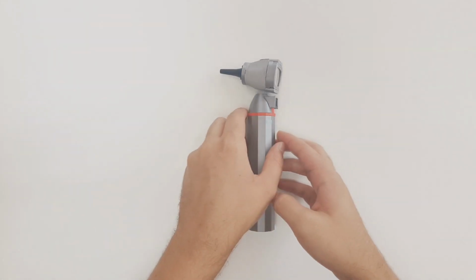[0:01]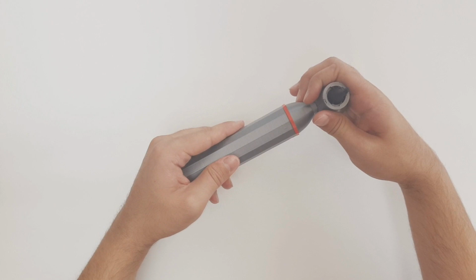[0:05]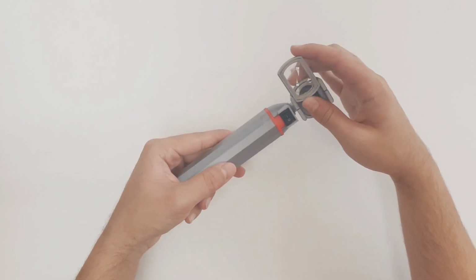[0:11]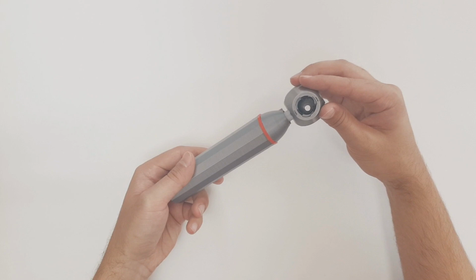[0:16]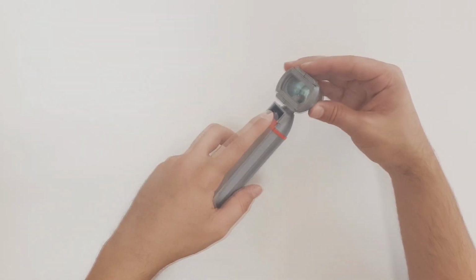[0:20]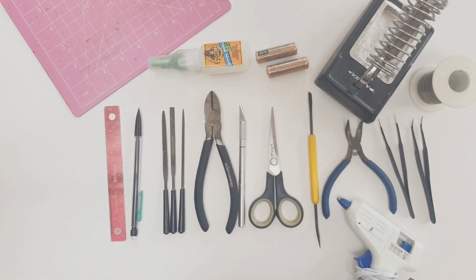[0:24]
In this video tutorial, I will be showing you how to fully assemble the Build Your Otoscope, a 3D printed open source device used to examine the outer ear. This device is designed by E4R Designs and published by GLIA. We'll start by reviewing some tools that you'll need for this build.
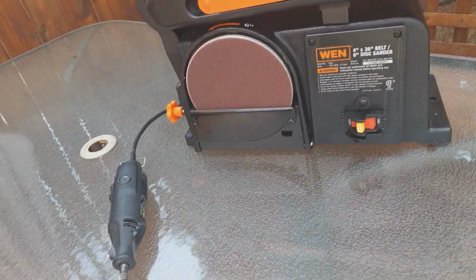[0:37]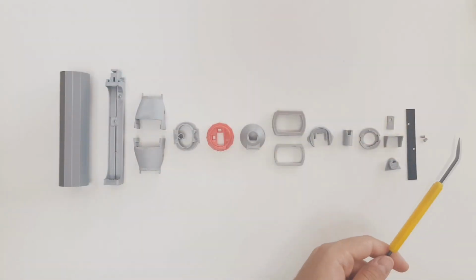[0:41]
You should have some precision filers, an X-Acto knife, super glue, a glue gun, various pliers, and a soldering iron. Also, a Dremel or a belt sander is needed for the lens portion of this video. We will go over the 3D printed parts you should have right now.
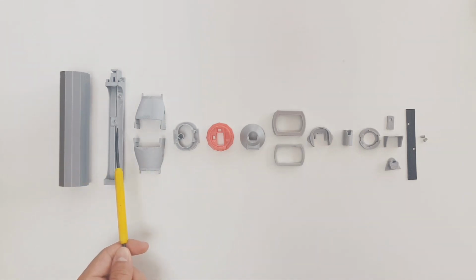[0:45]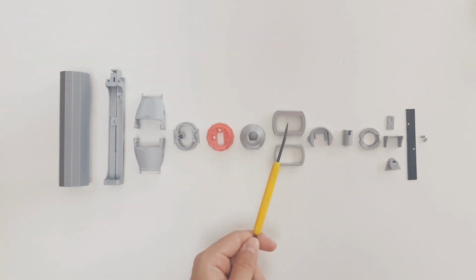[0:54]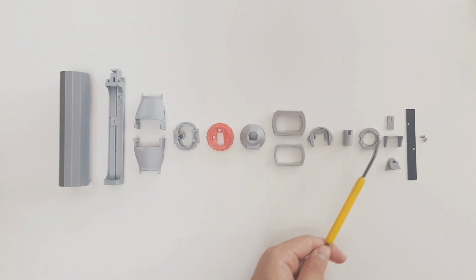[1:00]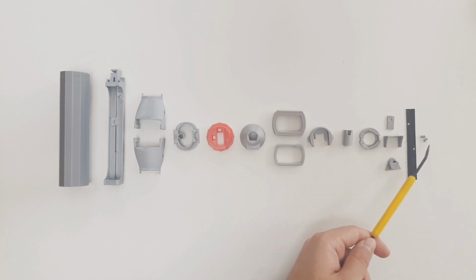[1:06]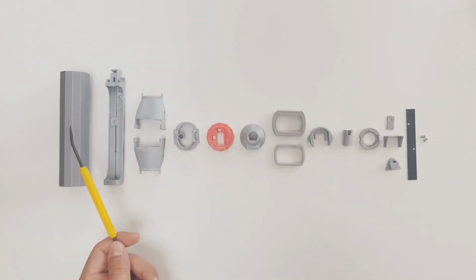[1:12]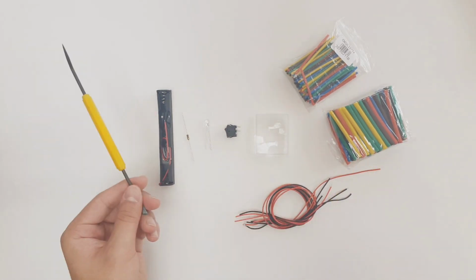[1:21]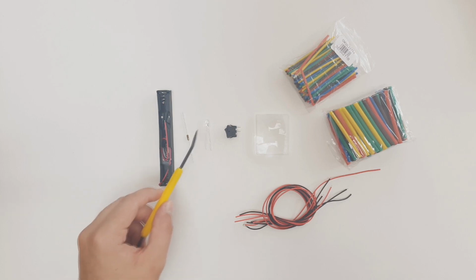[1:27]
There's the handle, battery compartment, two head shells, inner head shell, bottom button, top button, lens holder bottom, lens holder top, handle coupler, neck, specula holder, button lock, button protector, head lock, nameplate, and two nameplate locks. I printed all of these parts at 0.12mm resolution and 100% infill, except for the handle, which I printed at 20% infill.
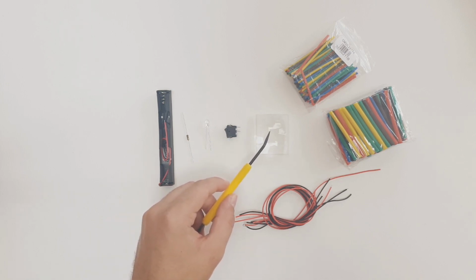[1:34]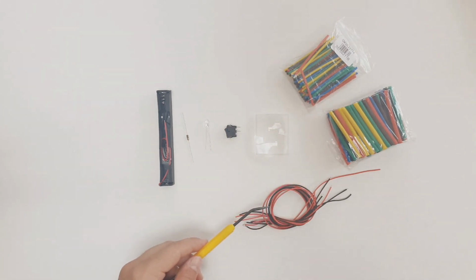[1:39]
For non-3D printed parts, you will need a AA battery holder, a 10 ohm resistor, a white 5mm LED light, a switch, a 3x magnification lens, shrink tubing, and extra wiring. A list of materials can be found in the description below.
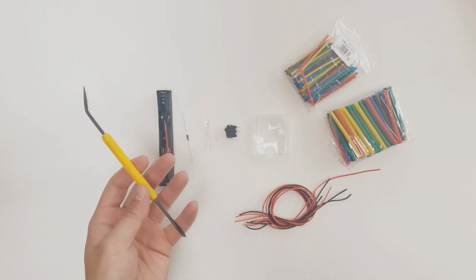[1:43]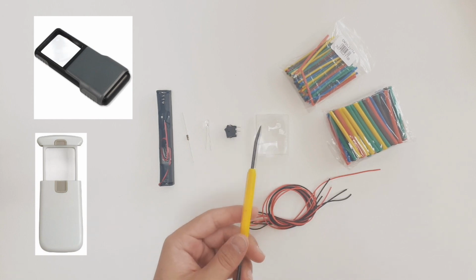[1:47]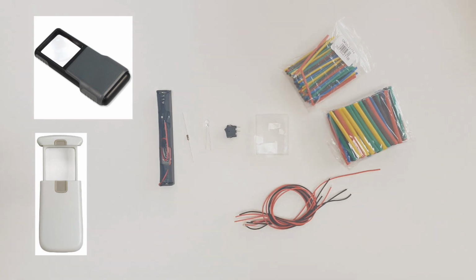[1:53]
The lens you should use can be taken from a pocket reader or small magnifying glass found at a department store or online. Ensure it is 3x magnification and made of acrylic material, not glass, so you'll be able to adjust and cut it to size.
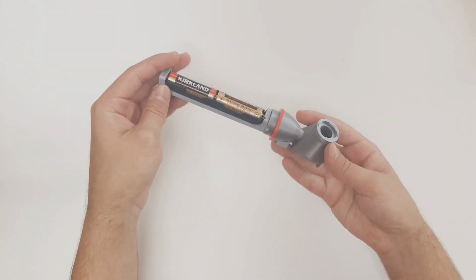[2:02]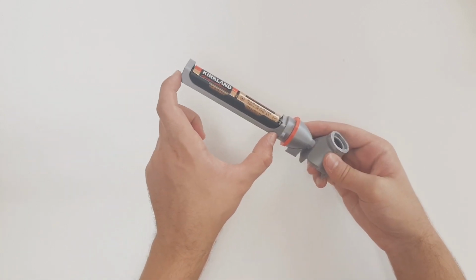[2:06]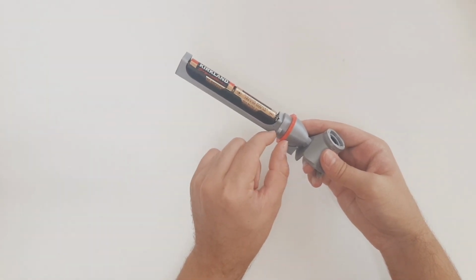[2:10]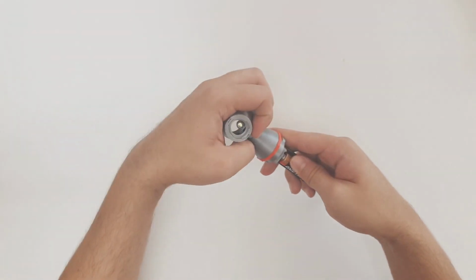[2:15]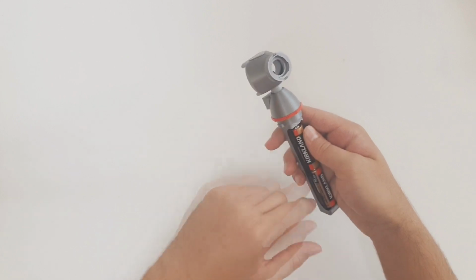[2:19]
In building this otoscope, we will start by first assembling the battery compartment area. Then we will add a few pieces to this battery compartment area. We'll then switch gears and assemble the otoscope head. And after the head, we will assemble this middle button area. The last step is putting it all together.
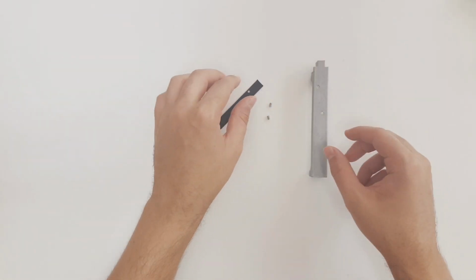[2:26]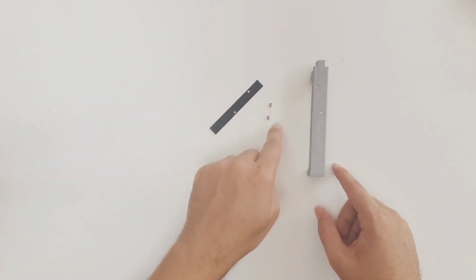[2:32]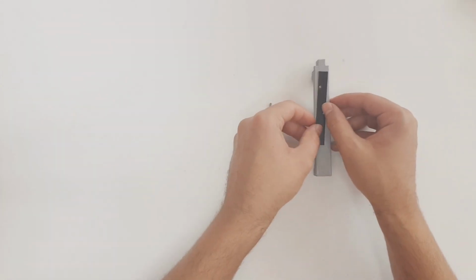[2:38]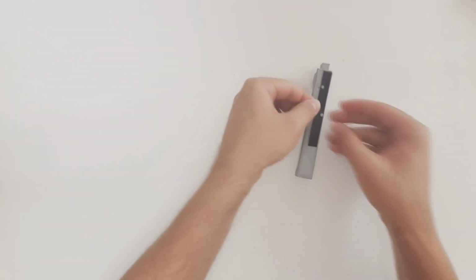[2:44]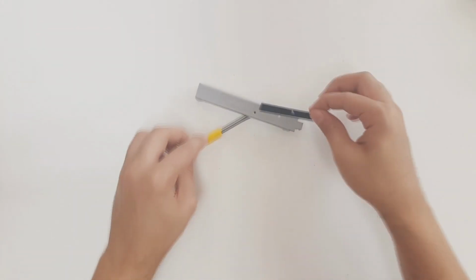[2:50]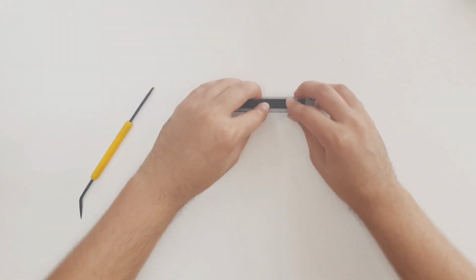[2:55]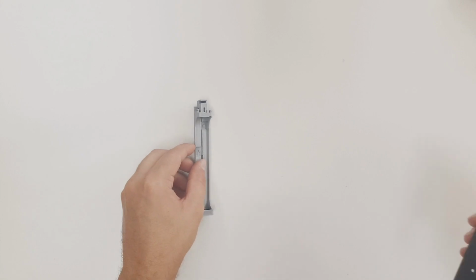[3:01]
So let's get started. We'll grab the battery compartment, nameplate, and two nameplate locks. We want to mount the nameplate on the back of the battery compartment using the locks, just like so. Whenever you're going to glue something down, it's always a good idea to dry fit the pieces first. Make sure everything fits nicely, then glue it into place.
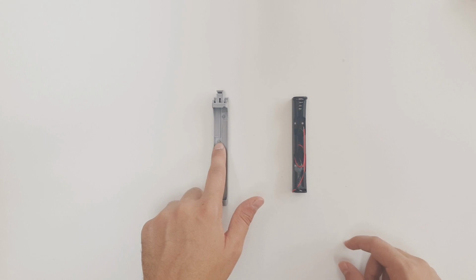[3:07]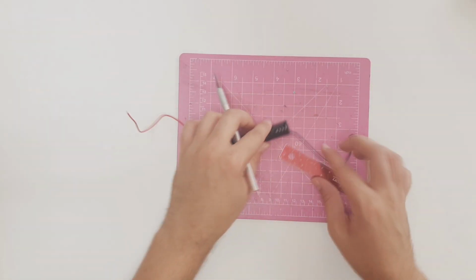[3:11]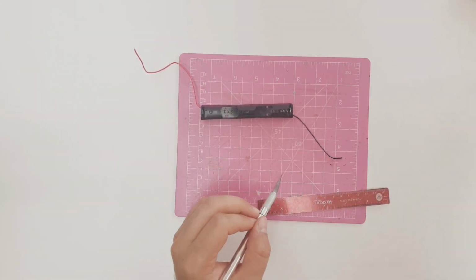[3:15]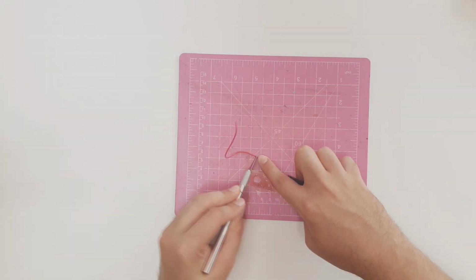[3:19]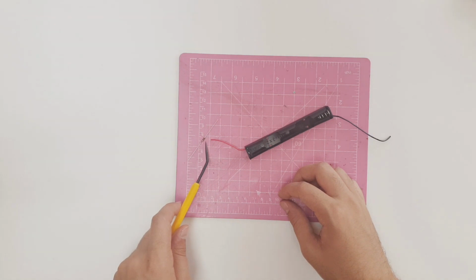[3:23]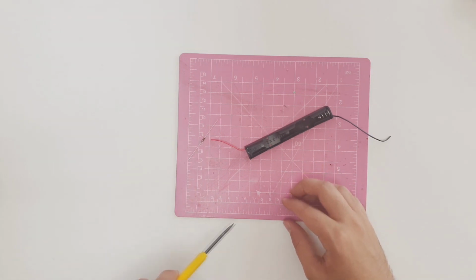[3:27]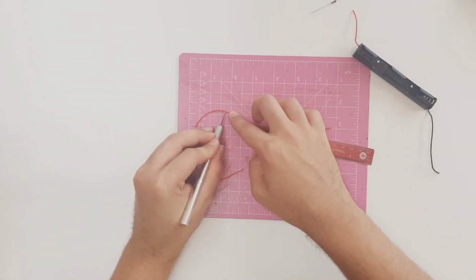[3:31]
With the nameplate secured, we now want to install the AA battery holder in its slot. We need to do some minor alterations to the wiring first. We need to cut the black wire to be 80mm long, and now cut the red wire to be 44mm long. We will add the 10 ohm resistor to the end of this red wire, and then add a wire to the other side of the resistor that is 130mm long.
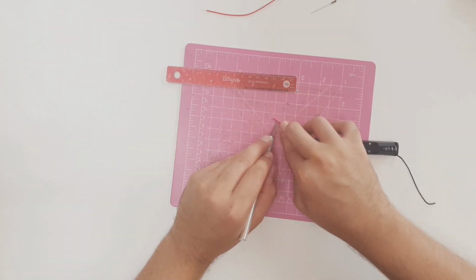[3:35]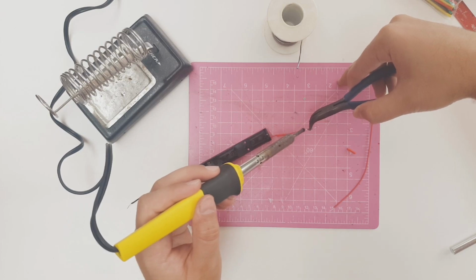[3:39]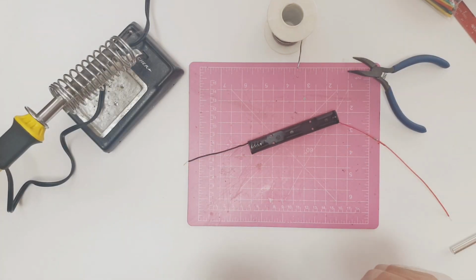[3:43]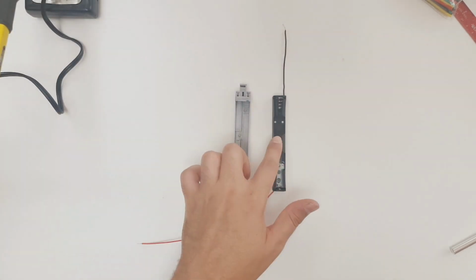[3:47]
So let's cut a red wire 130mm long. I'm going to strip all of the ends of the wires and solder the resistor to the end of the red wire. Your battery holder should look like this. Let's install the battery holder into the battery compartment.
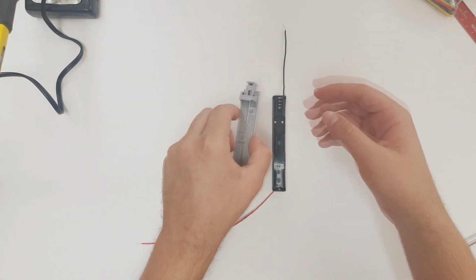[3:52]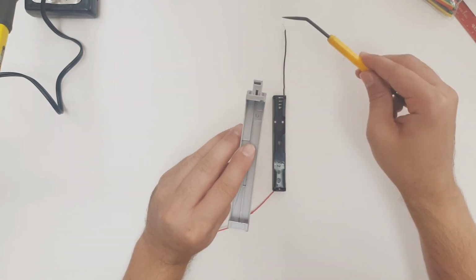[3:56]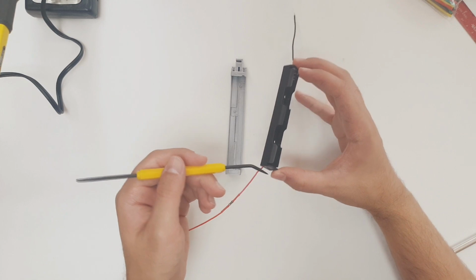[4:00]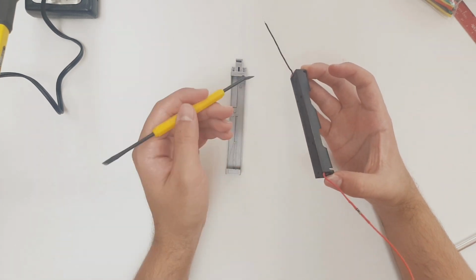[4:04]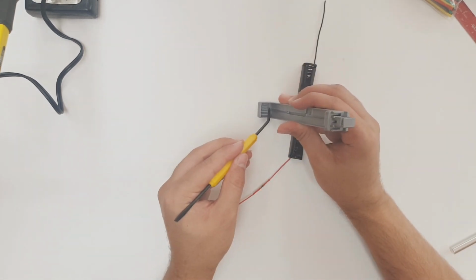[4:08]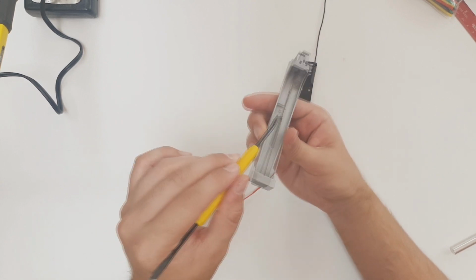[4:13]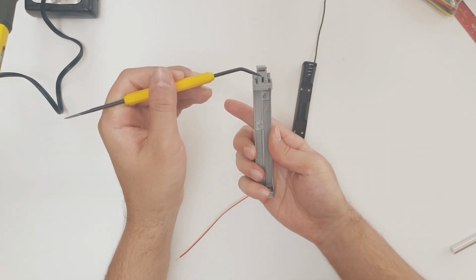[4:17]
This is a tight fit, so take your time. The black wire will go through this hole here and extend out. The red wire will curl under the holder, run along the bottom, and come out through the center hole in the battery compartment. The red wire actually fits in this track here, with the resistor fitting in this divot. And this is the hole that the red wire comes out from.
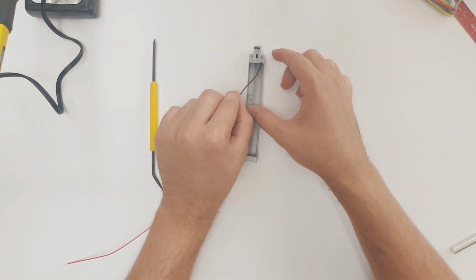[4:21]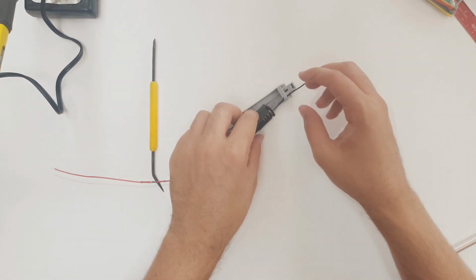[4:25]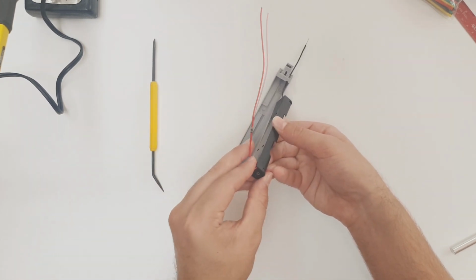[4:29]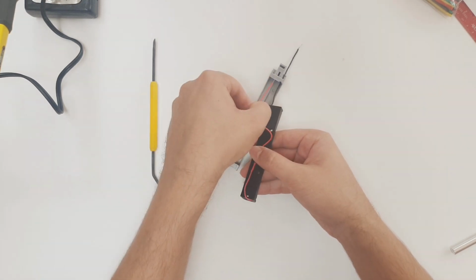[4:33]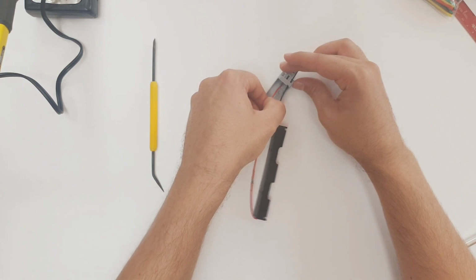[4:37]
So let's get this installed. First, push the black wire through the hole. Then wrap the red wire like so and push it through its hole. You may need to bend the end of the wire to get it pointing up, and using a pair of precision pliers really helps here.
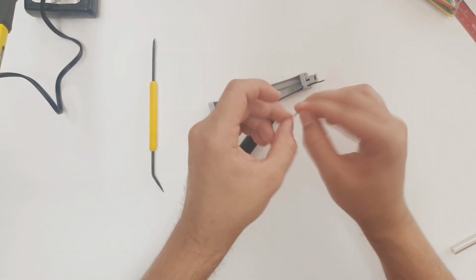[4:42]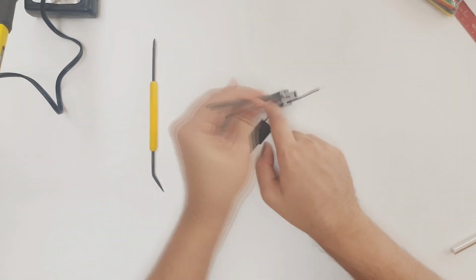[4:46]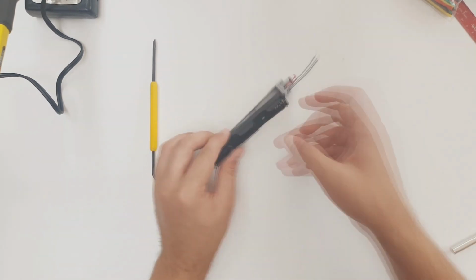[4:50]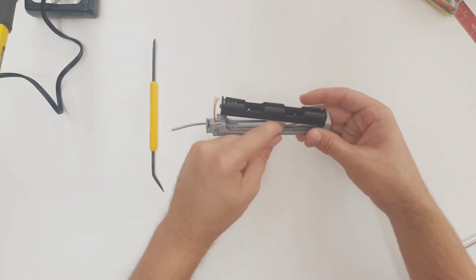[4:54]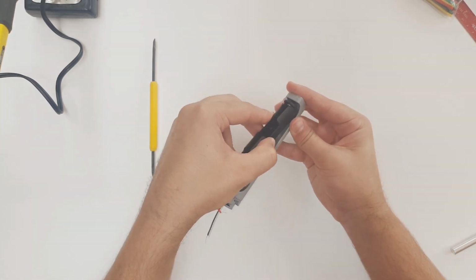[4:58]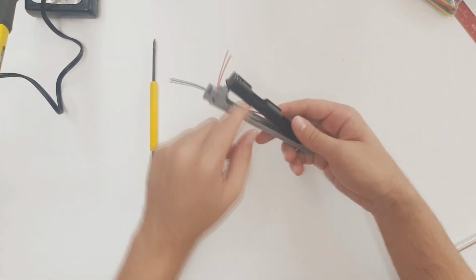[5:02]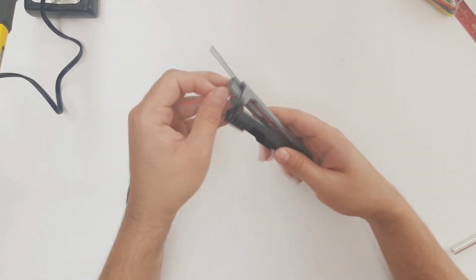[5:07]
Once both wires are through their holes, carefully position the red wire into its track. When the red wire looks like it's in its track, you can slide the battery holder into the compartment. And push the bottom end so that it clips into place.
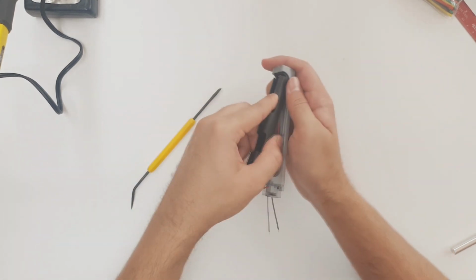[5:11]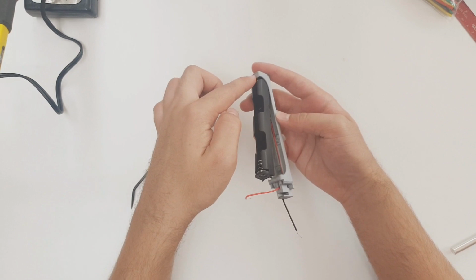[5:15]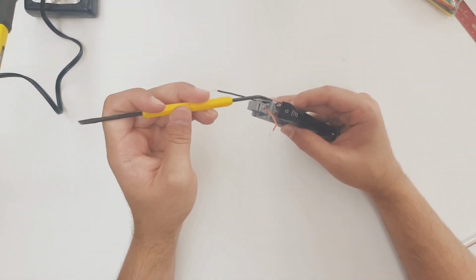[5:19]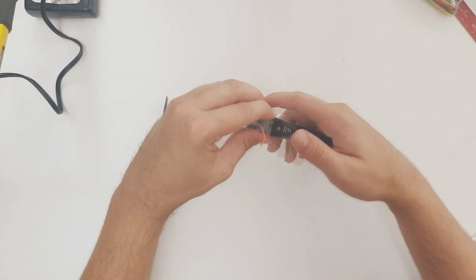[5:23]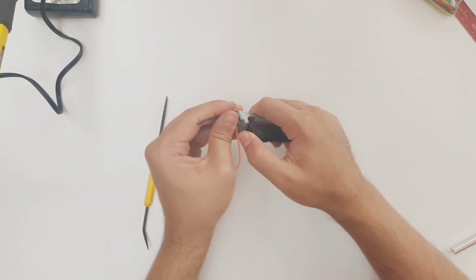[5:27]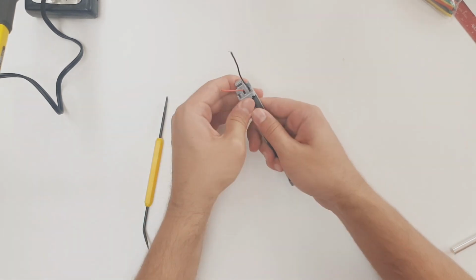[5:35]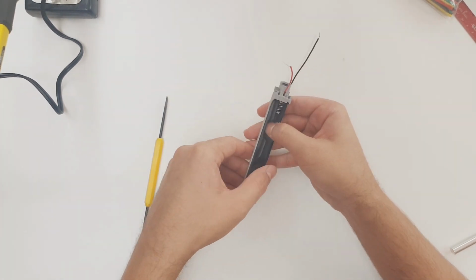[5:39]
To get the other end into place, there's actually a small cutout here for the black wire to clear this overhang. Bend the compartment very slightly and just push the battery holder into place. And through this whole process, continue to pull taut the wires to ensure none of them get stuck in the process. The battery holder now sits snug into the compartment.
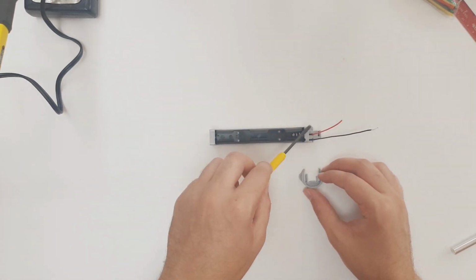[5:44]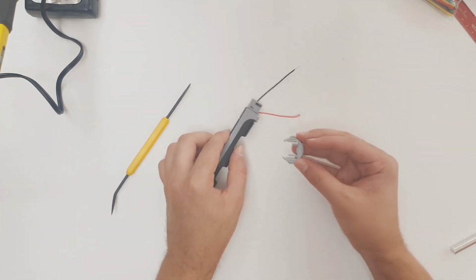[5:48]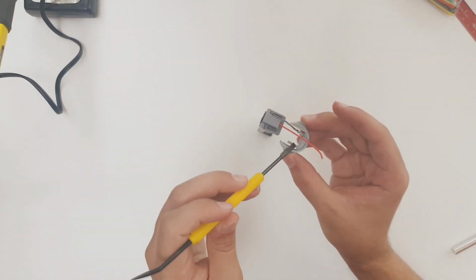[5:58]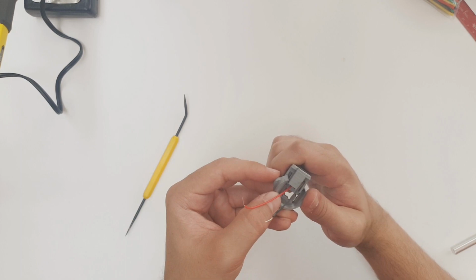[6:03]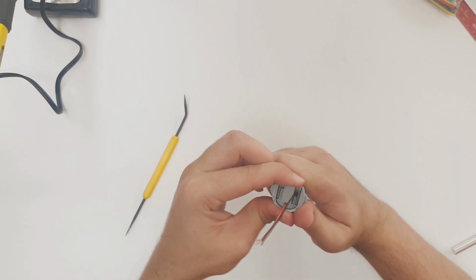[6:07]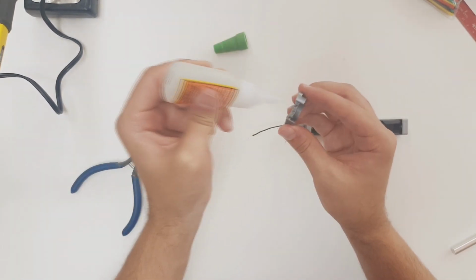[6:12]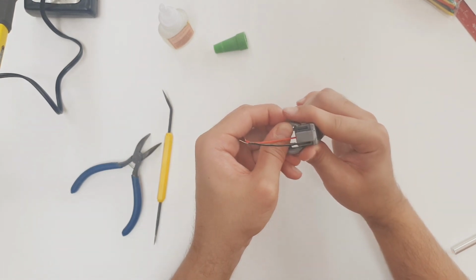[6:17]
The next step is installing the handle coupler piece on the battery compartment. These tracks on the battery compartment help line up the coupler for a precise fit. These prongs also fit snug onto the battery compartment. Here I'm dry fitting the part. Then I'll apply some super glue and permanently fit the part onto the battery compartment.
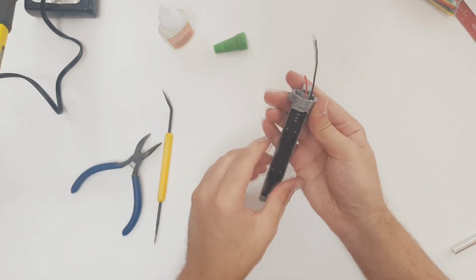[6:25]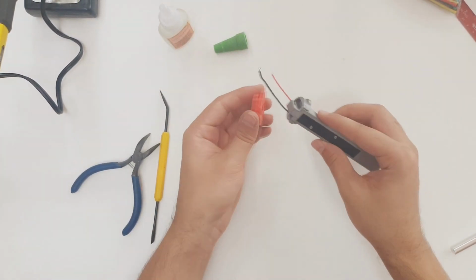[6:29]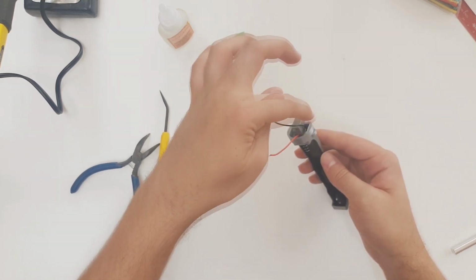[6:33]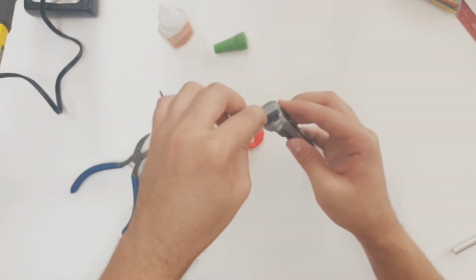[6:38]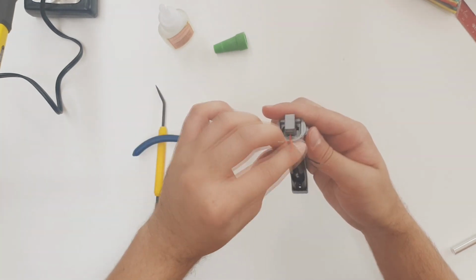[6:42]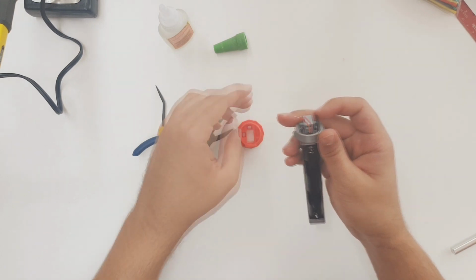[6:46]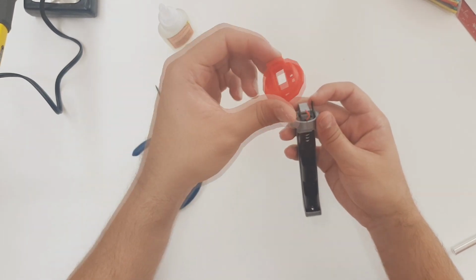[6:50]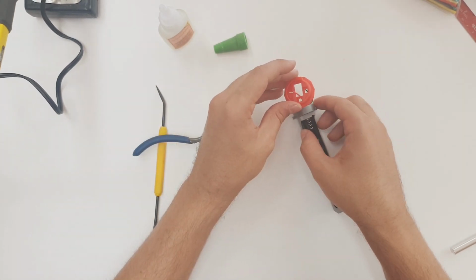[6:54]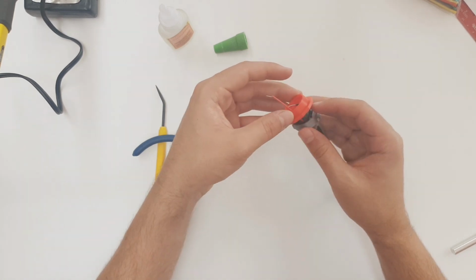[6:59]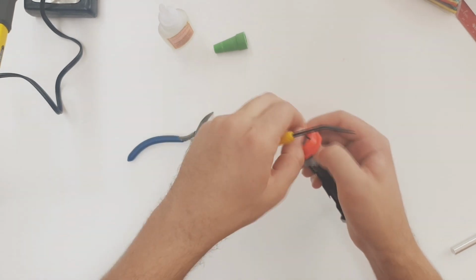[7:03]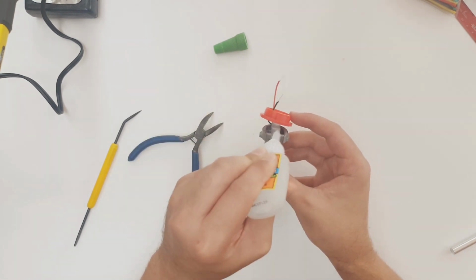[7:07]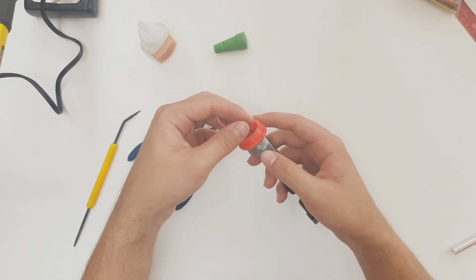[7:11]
The next step is to install our bottom button piece. Before we do this, I will run the black wire through a small hole on the battery compartment like so. We want to run the black and red wires through the two small holes on the bottom button piece. The large hole will couple with the battery compartment piece. As a dry fit, everything looks good. Now I'll apply some glue and push the two pieces together.
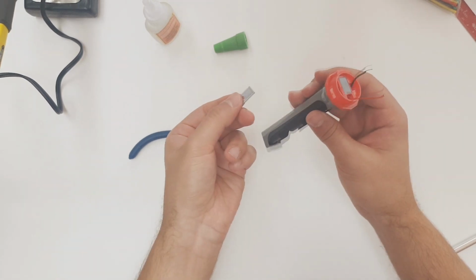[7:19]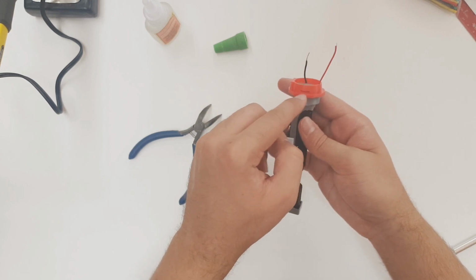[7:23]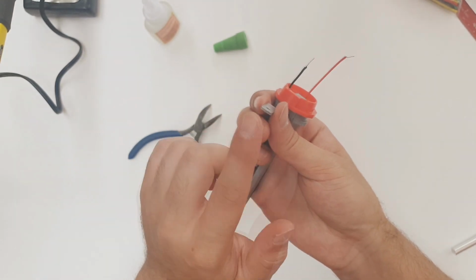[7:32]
We will also install the button lock piece now. It slips in through this slot and secures the bottom button part to the battery compartment. We will need to install it the right way. There's a small overhang. Make sure that the overhang is pointed downward, like so.
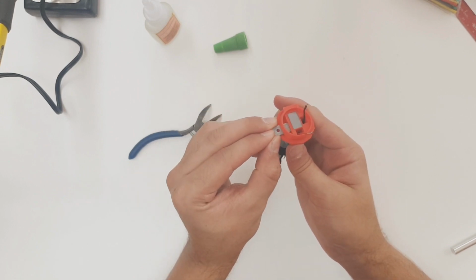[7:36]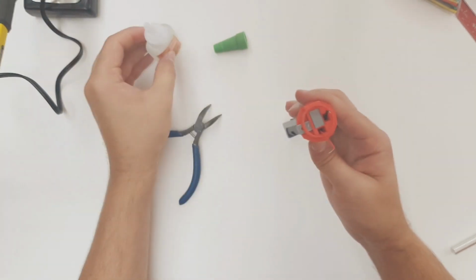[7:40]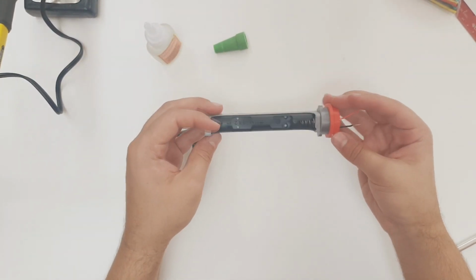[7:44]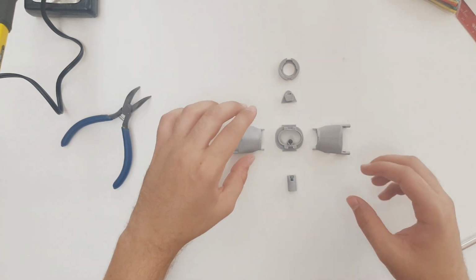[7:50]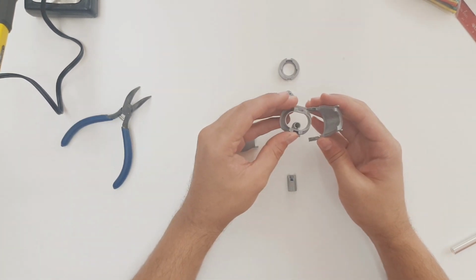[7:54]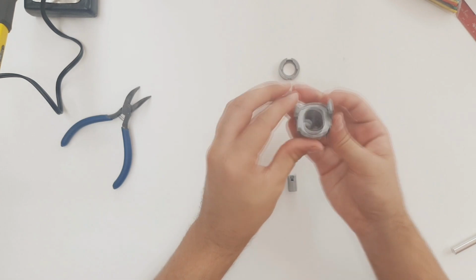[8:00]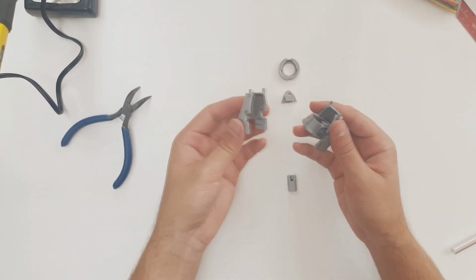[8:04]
The bottom half of the otoscope is now done. We'll set that aside and start working on the otoscope head. The otoscope head fits together like so. One of the head halves is connected to the inner head part through these top and bottom rails on the inner head. Once that's in secure, the other head half is connected.
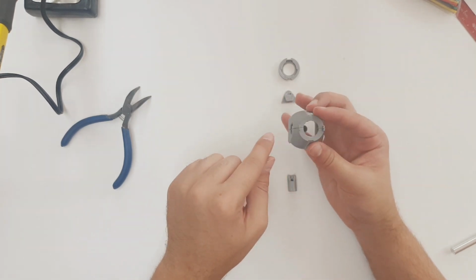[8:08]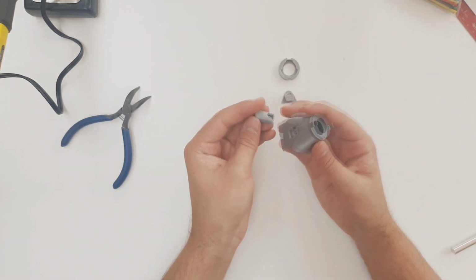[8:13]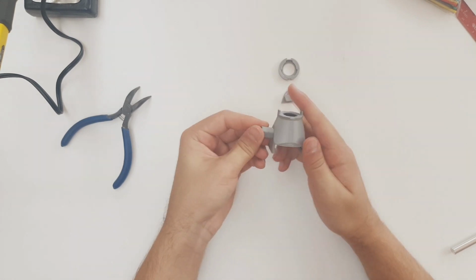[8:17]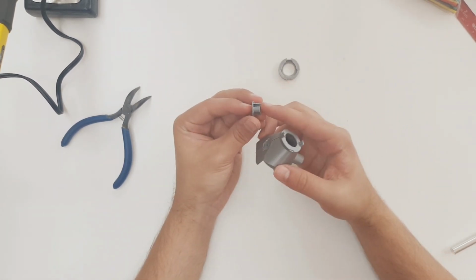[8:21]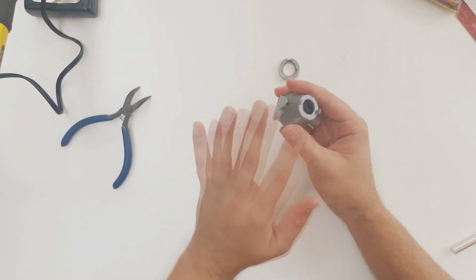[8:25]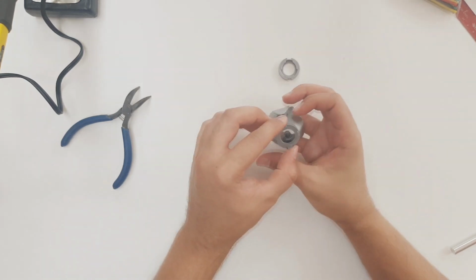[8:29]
On the bottom of the head, there's a hole for access to the LED area, and this is where the neck part gets pushed into. It should clip into place. On the top part of the head, the lock piece fits in and holds everything into place nice and snug. Don't dry fit this piece in all the way, as it is difficult to remove once it's in fully.
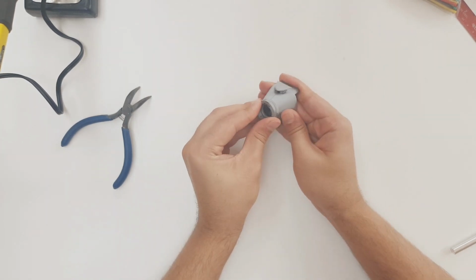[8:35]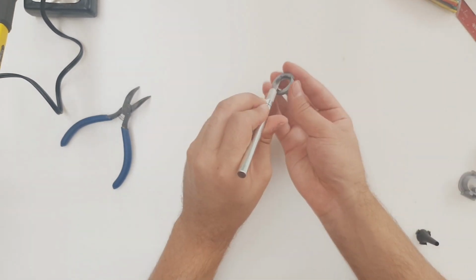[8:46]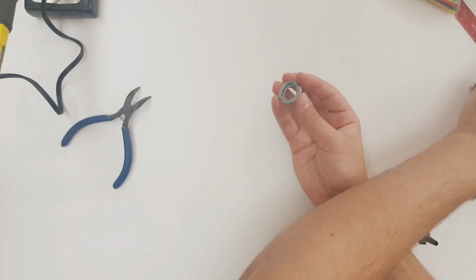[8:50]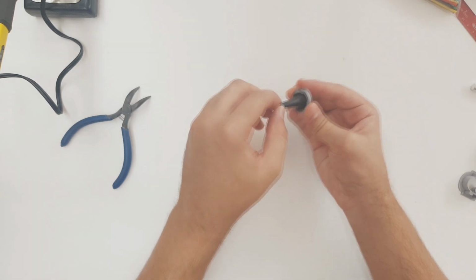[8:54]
Finally, the specula holder fits onto the front of the head. It's also a good idea to test fit a Welch Allyn wing tip specula. I'm not very happy with how the specula is fitting right now, so I actually cut off a bit of the overhang from the inside ridge of the specula holder, and now the specula fits perfectly. The head pieces fit well.
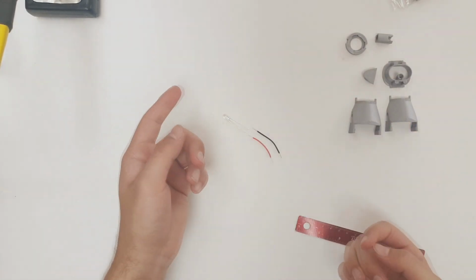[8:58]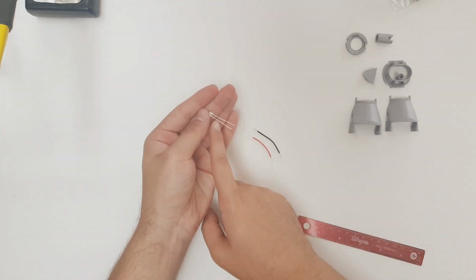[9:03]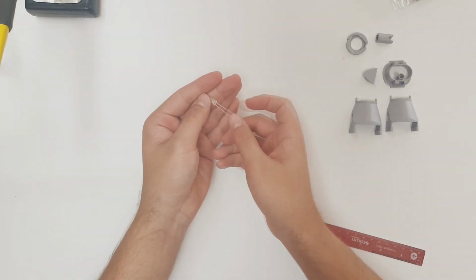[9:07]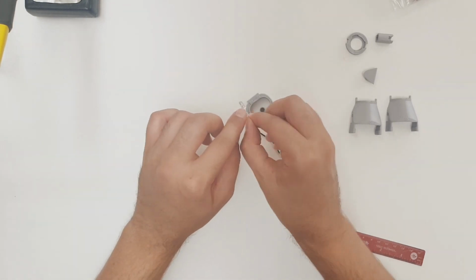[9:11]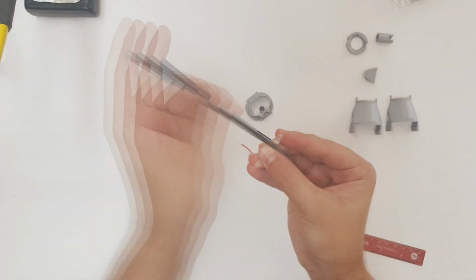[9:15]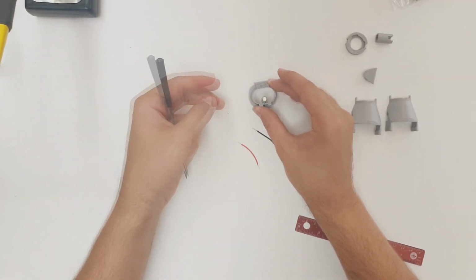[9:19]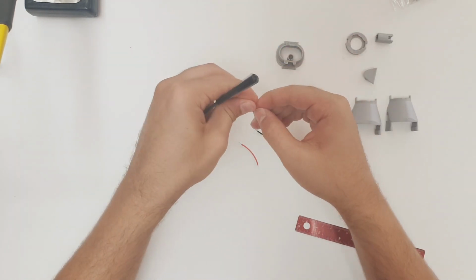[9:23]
Let's grab our LED and prepare it to fit in the inner headpiece. We'll be adding 50 millimeters of red and black wiring to the positive and negative terminals of the LED. Before we do this, we will sand down the ridge around the LED to make sure that it fits perfectly in the LED slot. Dry fitting the LED shows that it fits nicely, so I'm going to solder the wires to the LED now.
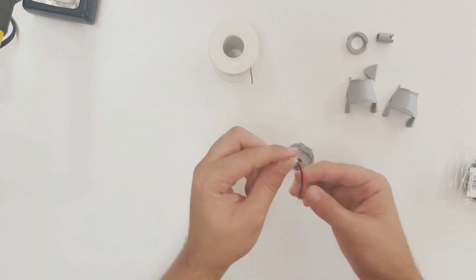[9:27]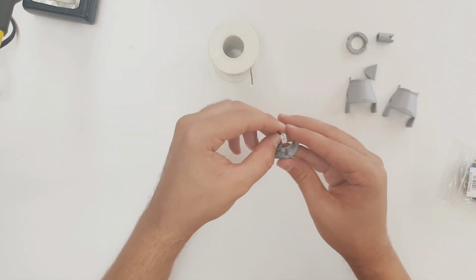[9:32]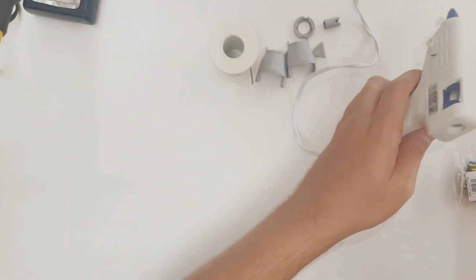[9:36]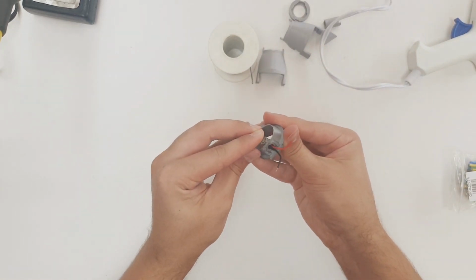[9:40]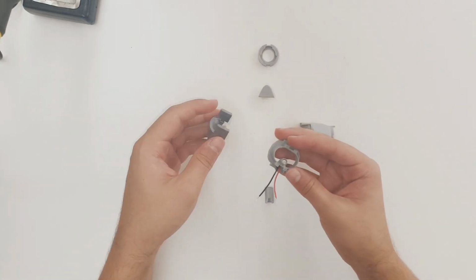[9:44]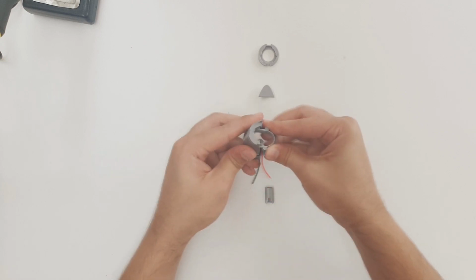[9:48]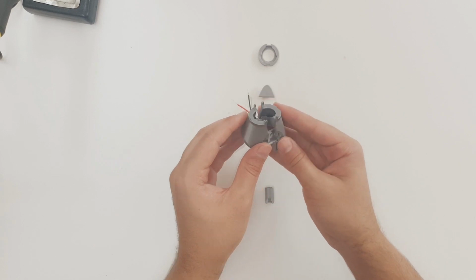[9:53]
I'll slide the wires in through the LED slot. I will use a small amount of hot glue to keep the LED in place. Let's put the headpieces together now. Slide the inner headpiece into one head shell, then the other head shell.
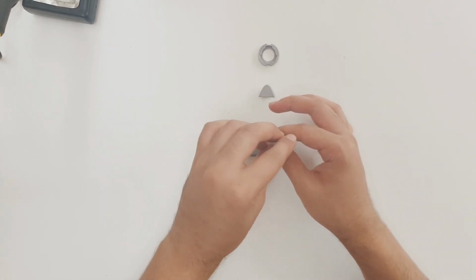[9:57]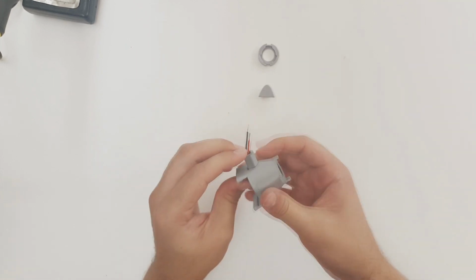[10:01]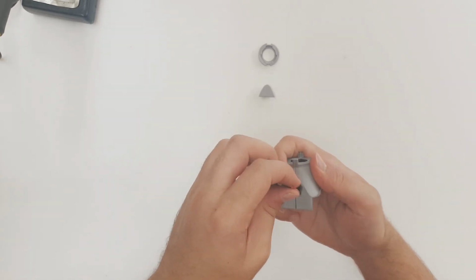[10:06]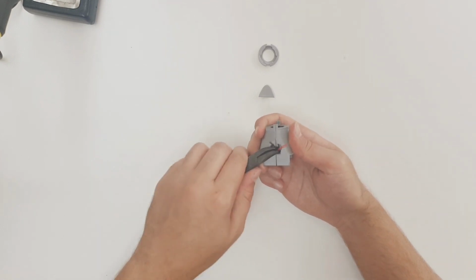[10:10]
And now we'll install the neck. I was finding that the neck wasn't fitting right. It was misaligned and a little wobbly. It seems like the new wires were getting in the way. But after bending them upwards slightly, the neck piece was able to fit correctly.
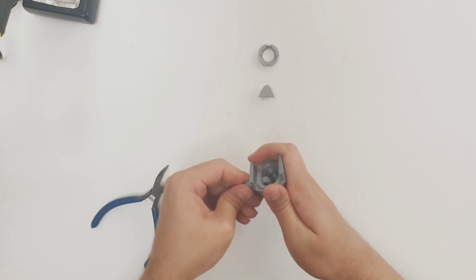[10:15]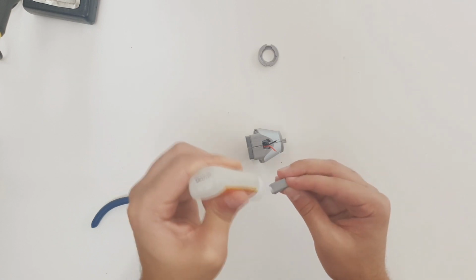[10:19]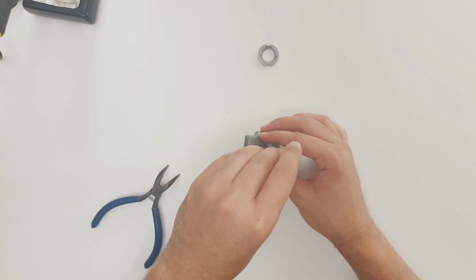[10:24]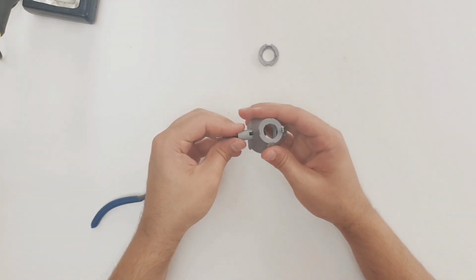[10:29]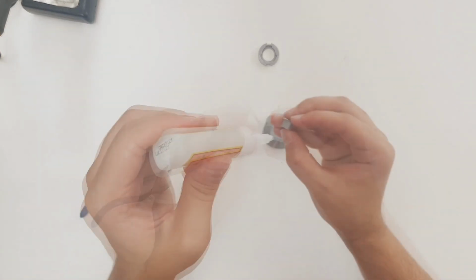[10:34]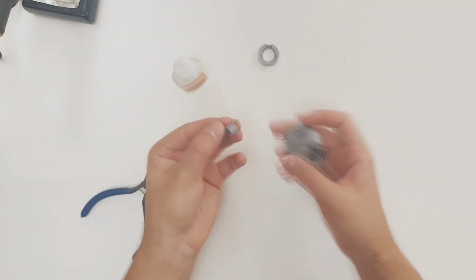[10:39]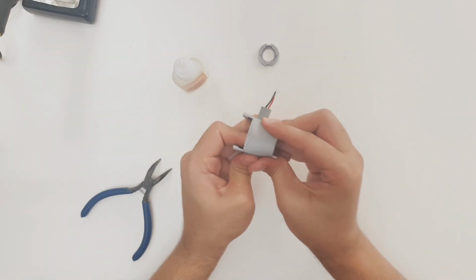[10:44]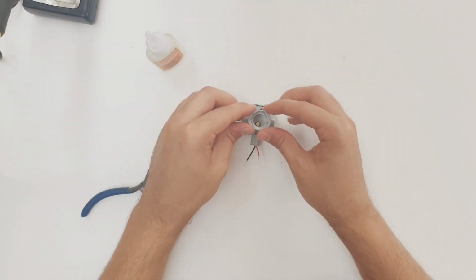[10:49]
I'm going to super glue the neck piece onto the head now. And I'll also super glue the head lock piece into its slot. Finally, I'll super glue the specula holder to the front of the otoscope head.
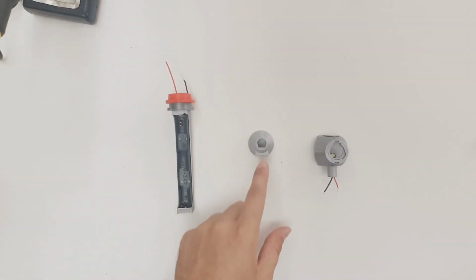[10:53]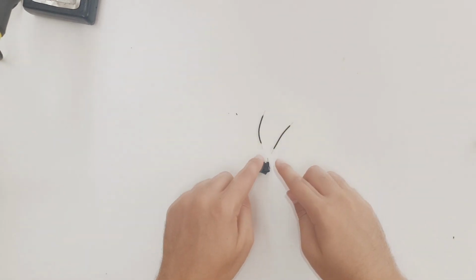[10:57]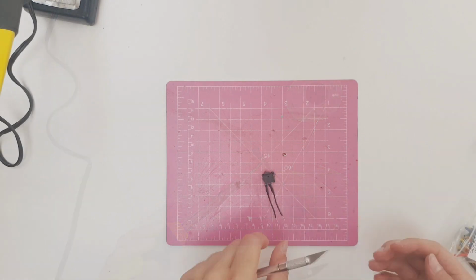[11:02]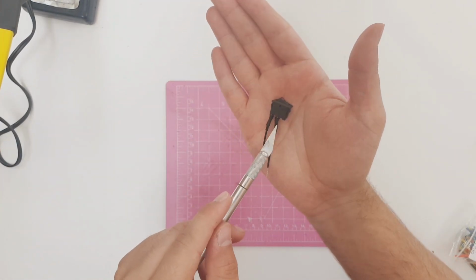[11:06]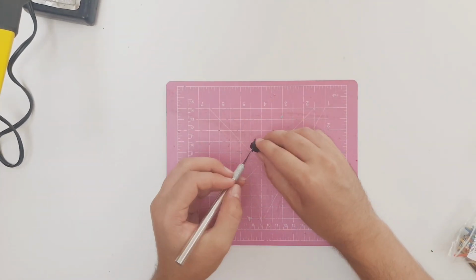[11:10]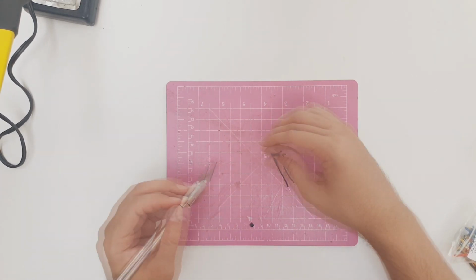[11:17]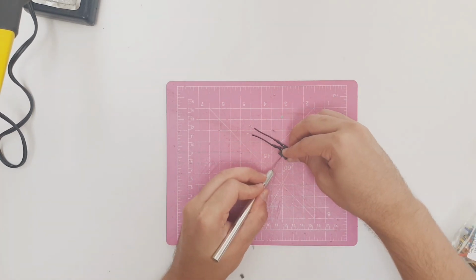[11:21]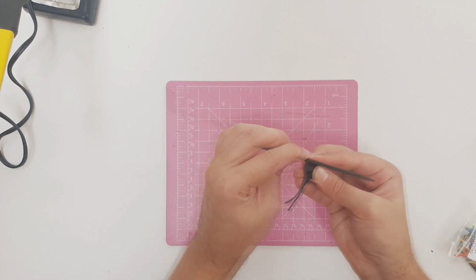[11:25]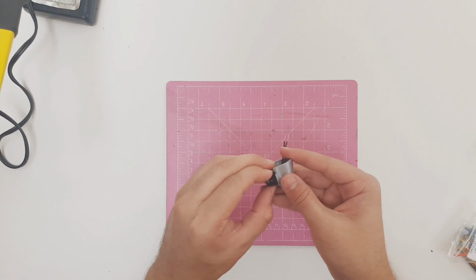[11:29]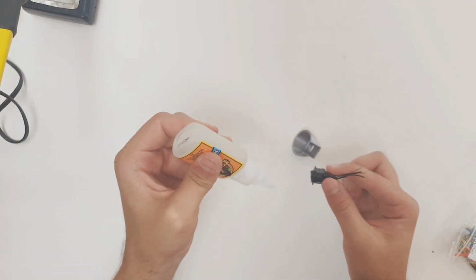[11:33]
We will now assemble the middle of the otoscope. We'll start by soldering two black wires 50 millimeters in length to the switch. This switch also has these friction fit plastic bits on the side, and we don't need those for this otoscope, so we'll just cut those off and clean up the sides with a file. Dry fitting the switch into the top part of this button shows a nice snug fit. Now we'll just super glue the switch to this part.
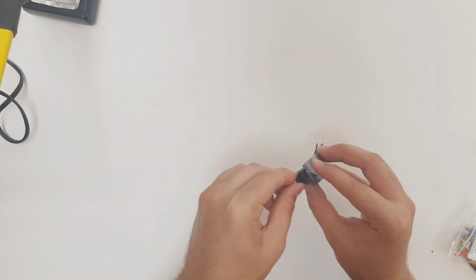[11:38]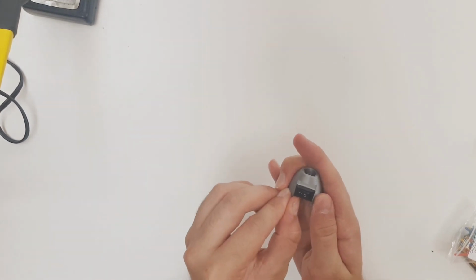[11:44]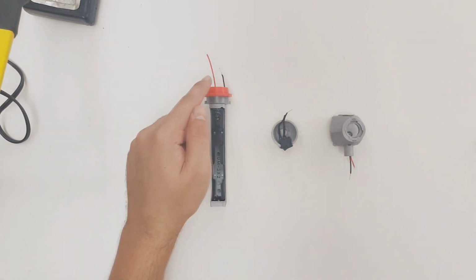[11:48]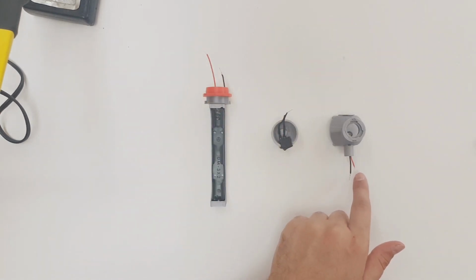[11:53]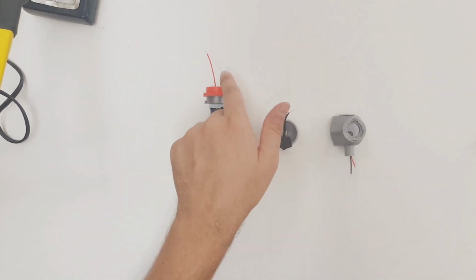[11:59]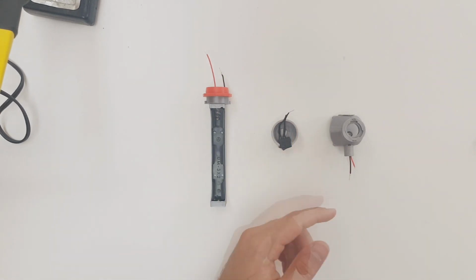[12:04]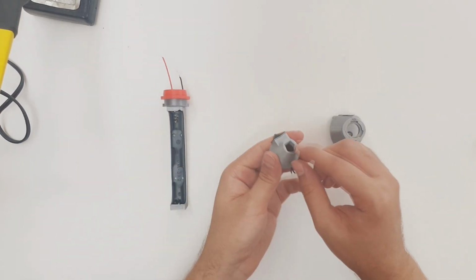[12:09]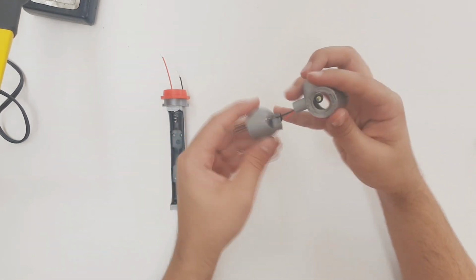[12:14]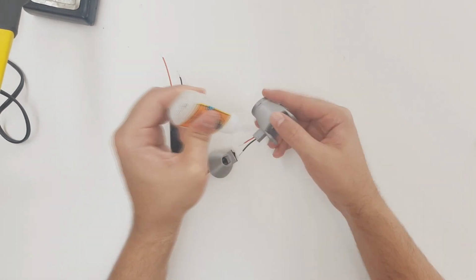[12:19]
It is now time to fit these three pieces together. For soldering, the red wire from the battery should connect with the red wire in the head, and one black wire from the switch should go to a black wire in the battery, and then the other black wire from the switch should go to the black wire in the head. Before we solder any of these wires, we'll dry fit the neck right into the slot on the button holder. It's a very tight fit, but it fits nicely. Now I will super glue the neck into this slot.
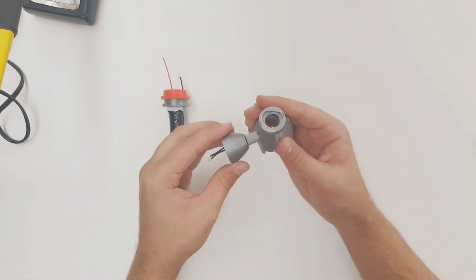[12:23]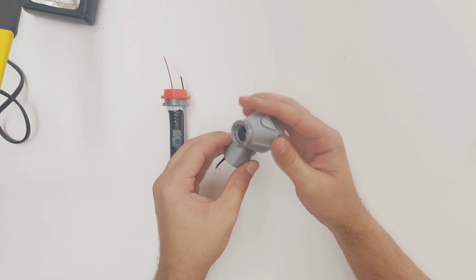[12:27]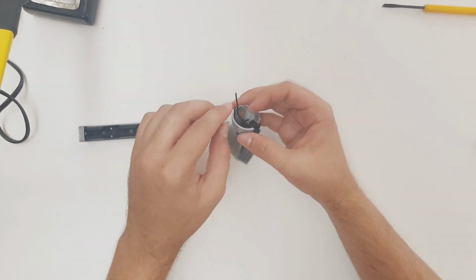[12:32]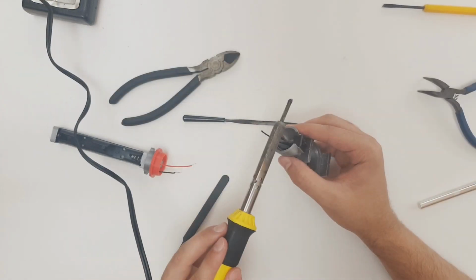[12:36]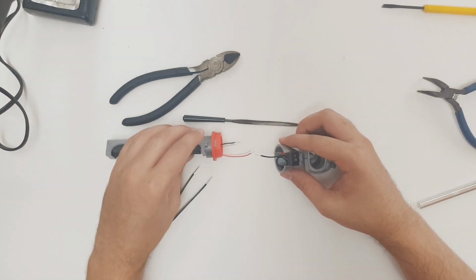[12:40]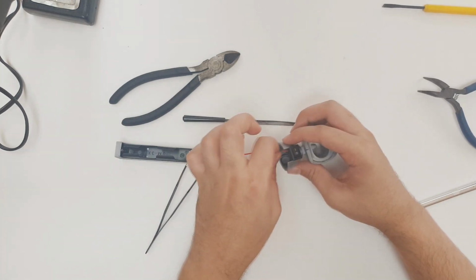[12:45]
We'll solder these connections. First, I'll solder the black wire from the head to one of the black wires from the switch. Once these two wires have been soldered, the rest is very simple. You're just going to solder red to red and black to black.
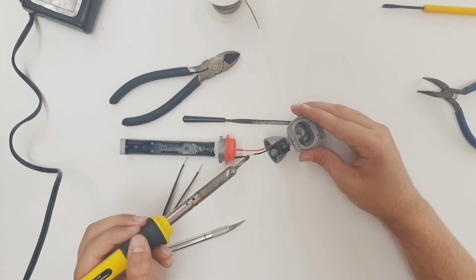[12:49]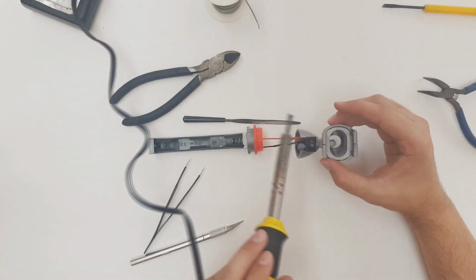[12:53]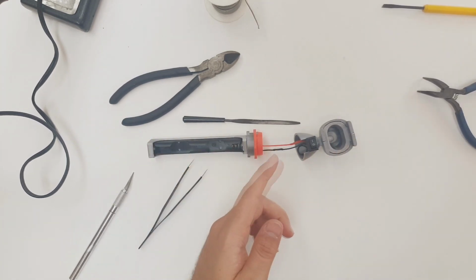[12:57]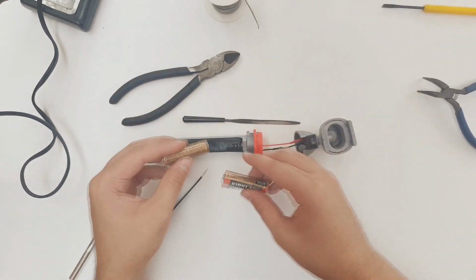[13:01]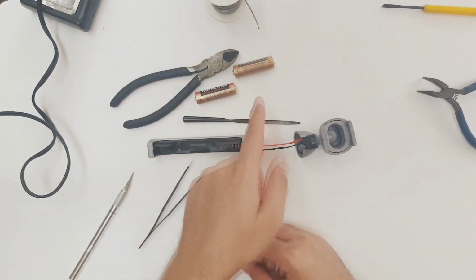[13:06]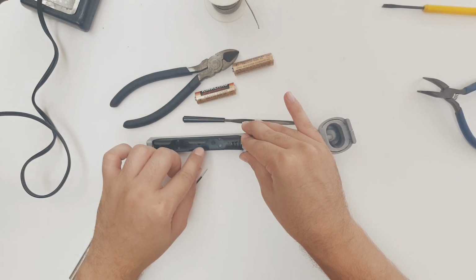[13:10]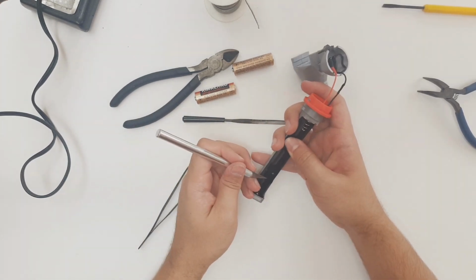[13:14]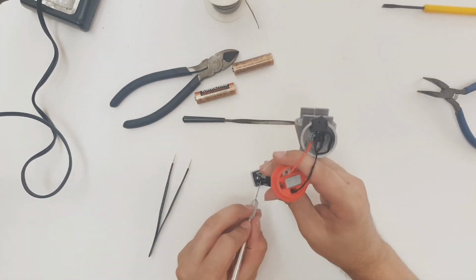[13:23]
Before we glue the two halves together here, I like to test out the otoscope and make sure that it's functioning correctly. We'll slide two AA batteries into the battery compartment and run a quick test. Now, I find that these battery holders hold onto the battery a little too tight for my liking. So as an optional step, I'll just trim down the battery flaps on the holder with my X-Acto knife, so that it's easier to get the batteries in and out of the compartment. Like I said, this is an optional step.
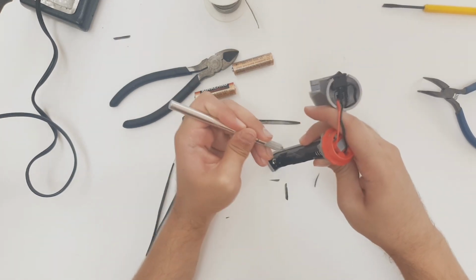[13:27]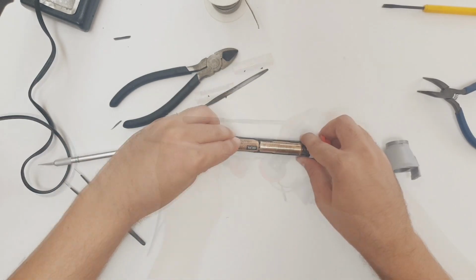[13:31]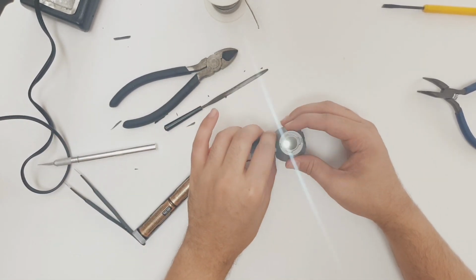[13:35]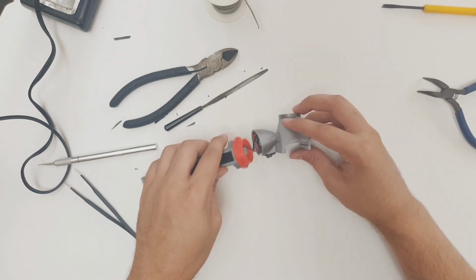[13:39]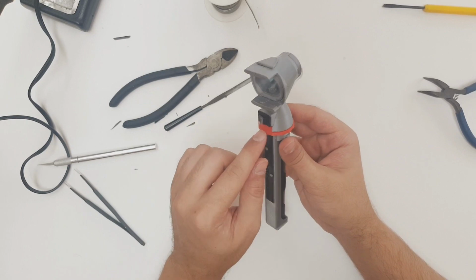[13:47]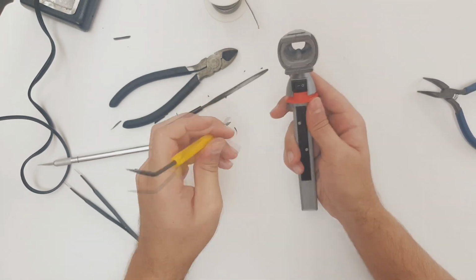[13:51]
And now putting the batteries in, we see that the light is working and the switch is also working. So the next step would be pushing the top half onto the bottom half. And the dry fit looks good, it fits nice and snug. So I'm just going to pry it off here, and we'll super glue the two halves together now.
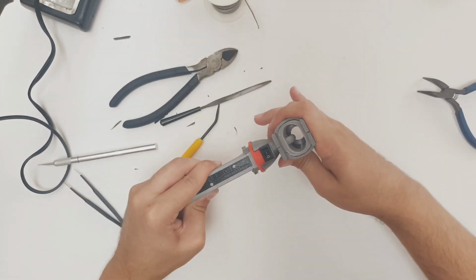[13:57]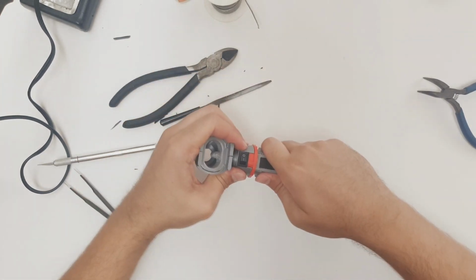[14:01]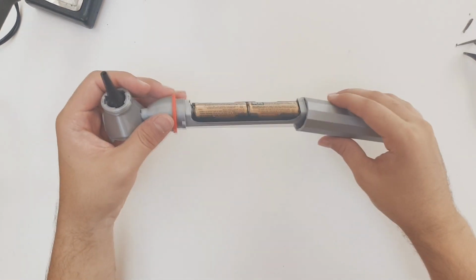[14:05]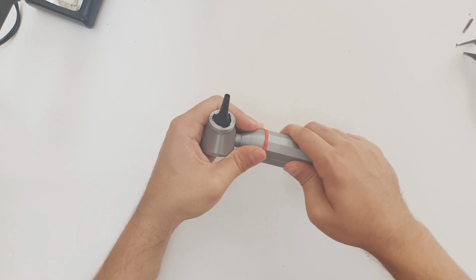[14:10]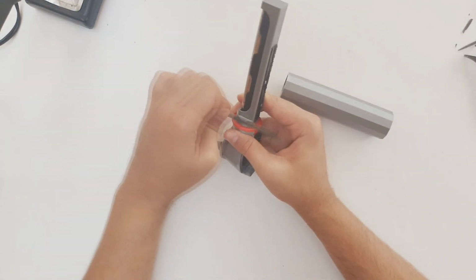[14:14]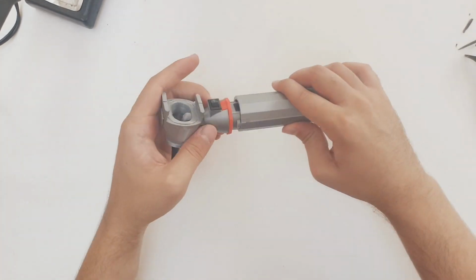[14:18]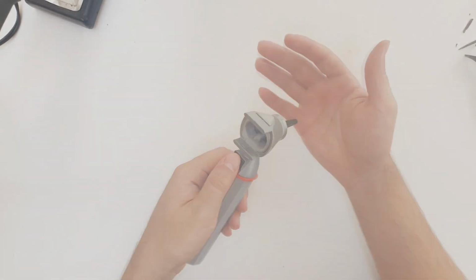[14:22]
We can now grab our handle and push this into place. The handle locking feels a little bit tight for me, so I'm going to lightly file these locking nubs here. And this seems to have done the trick, and the handle fits much nicer now.
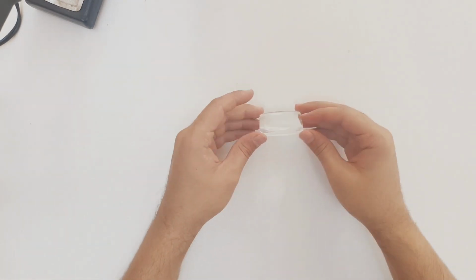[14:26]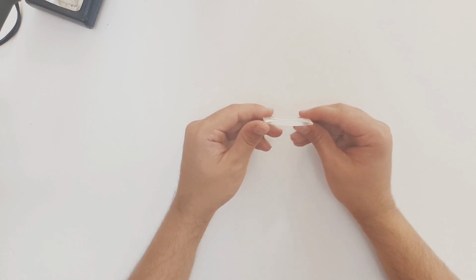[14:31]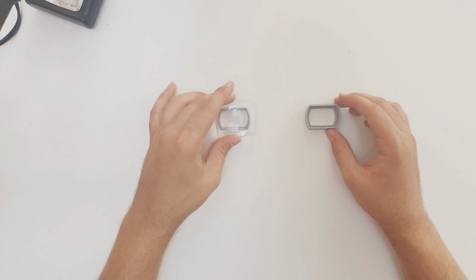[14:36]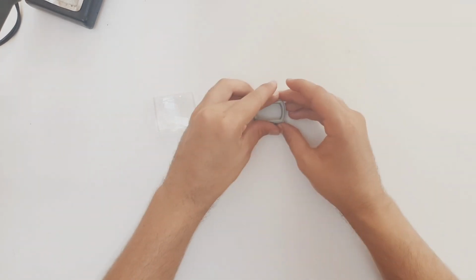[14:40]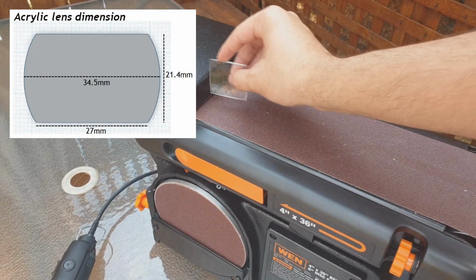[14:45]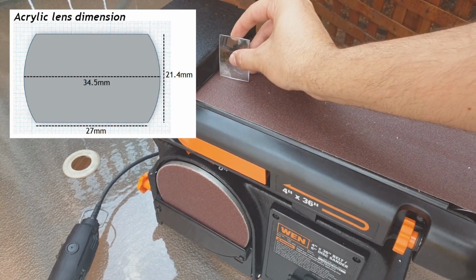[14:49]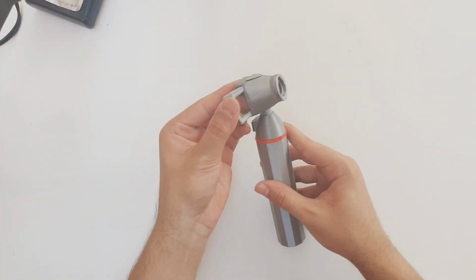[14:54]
Let's work on the lens piece. We want to properly size this 3x magnification lens so it fits into the lens holder, specifically the smaller lens top holder. Once properly sized, this lens top holder will fit into the larger lens bottom holder. The lens would be sandwiched between the two pieces. By using a Dremel or a belt sander, the lens can be properly sized to fit into these pieces. And finally, the lens part is complete and it can be installed into the otoscope.
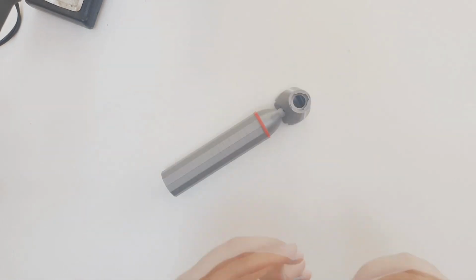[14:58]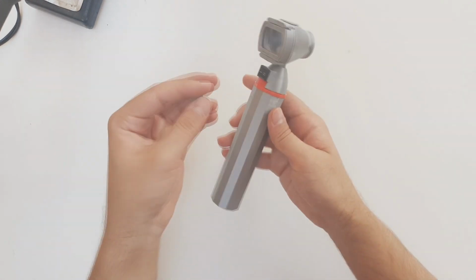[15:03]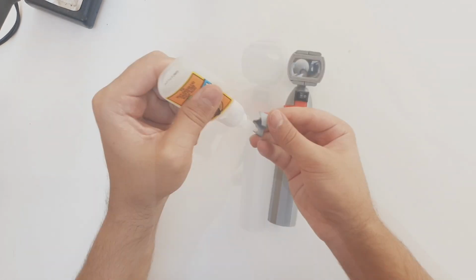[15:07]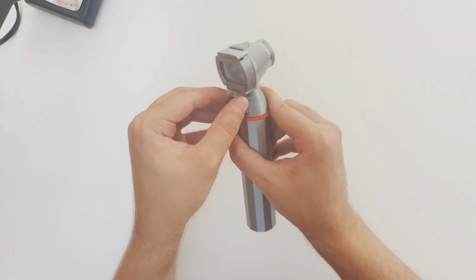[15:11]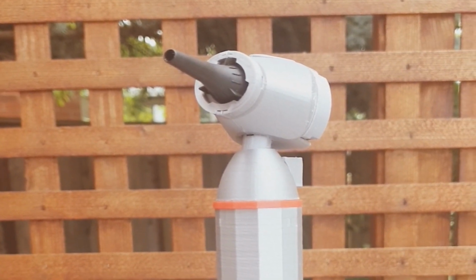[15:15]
As another optional step, a button guard can be installed right above the switch. This will help prevent accidentally activating the switch. I will install it on this otoscope using some super glue. This concludes the Build Your Otoscope assembly tutorial.